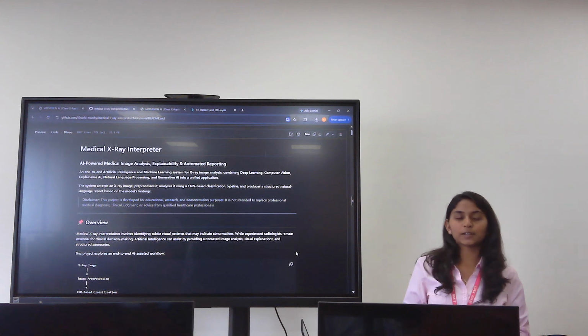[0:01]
Under the Samsung Innovation Campus, I've built a capstone project. The topic is a medical X-ray interpreter, and my model is MedVision AI.
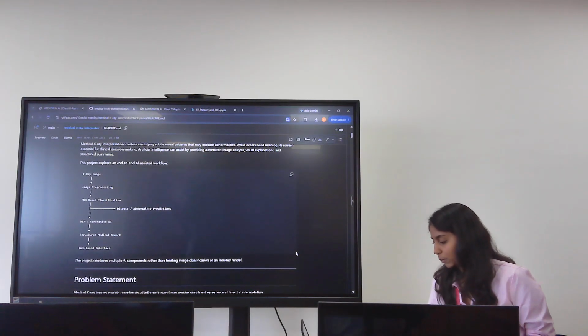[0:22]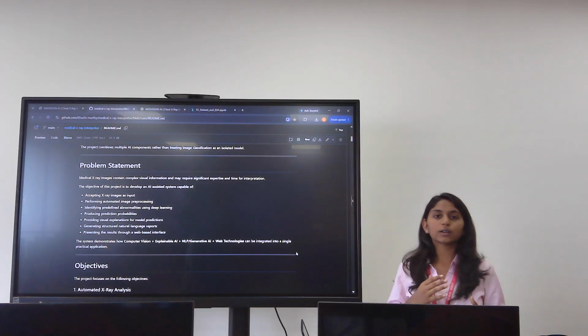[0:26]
Looking into the problem statement, medical X-ray images are very complex. They have very complex visual information which is difficult for normal people to understand. You just take an X-ray and it's difficult to understand whether you have some disease, or which disease you have. So I've tried to find a solution to that. Yes, there are expert radiologists, but we can only visualize what is there in the X-ray.
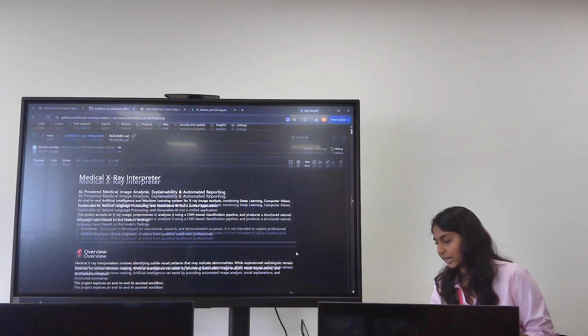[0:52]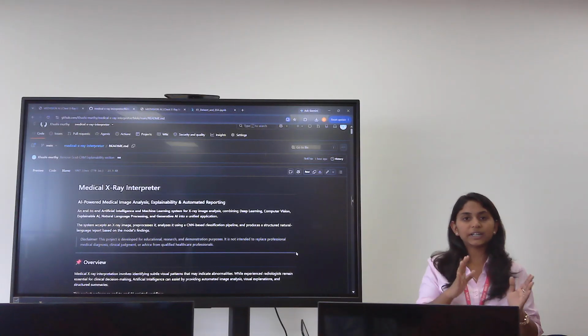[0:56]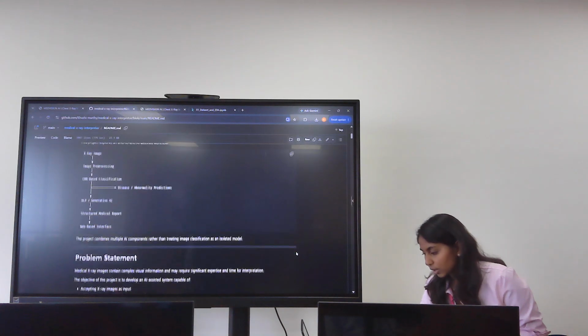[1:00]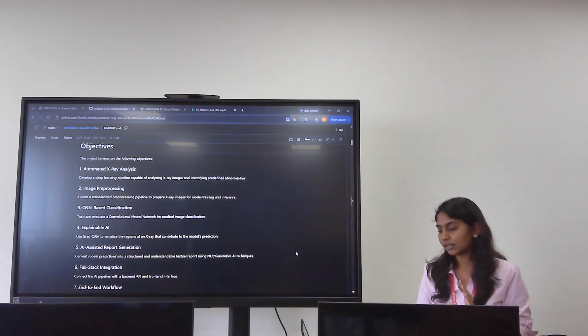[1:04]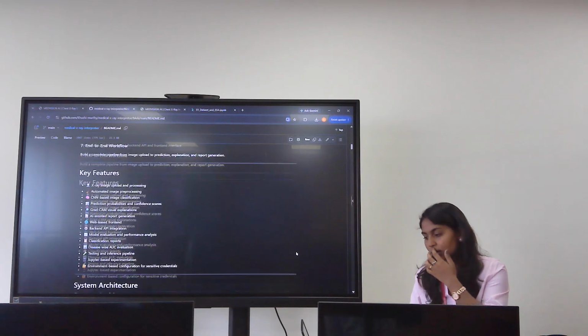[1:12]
MedVision AI is an AI-powered medical image analyzer. It is an end-to-end artificial intelligence and machine learning model. Looking into my project, the objectives are analyzing the X-ray. I have done image pre-processing and I have included CNN-based classification.
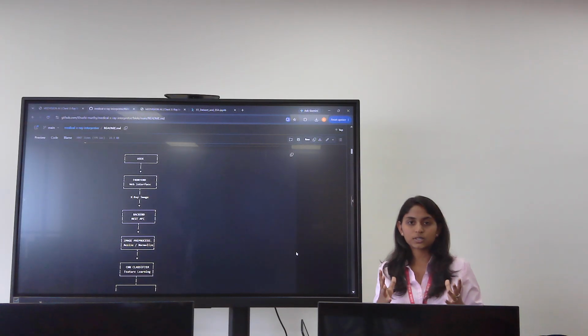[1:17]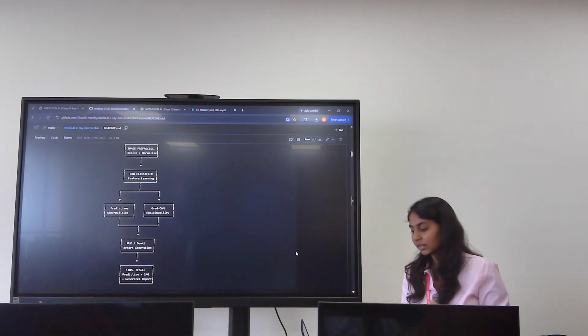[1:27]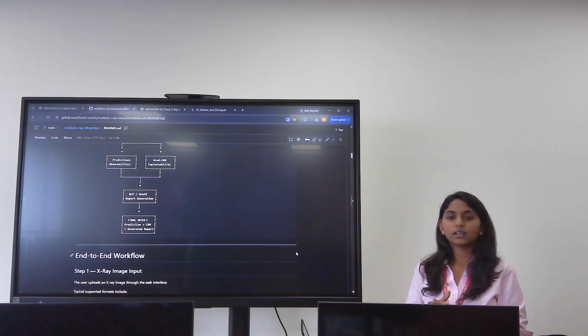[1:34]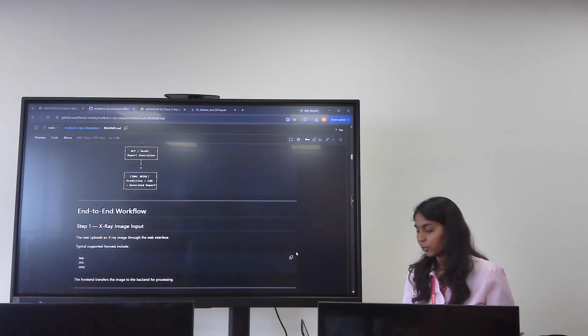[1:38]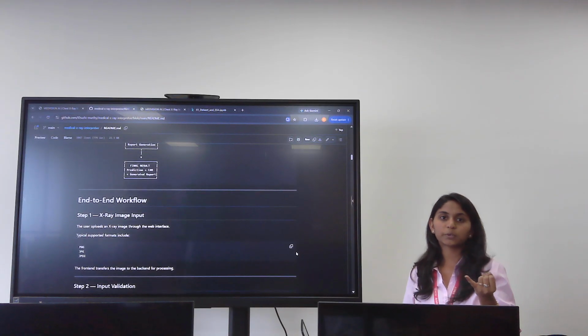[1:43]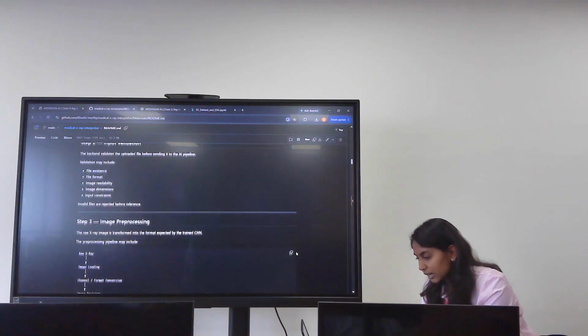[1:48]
This is the system architecture: when a user uses the model, they get a front end. We can put in an X-ray image, which will be processed in the backend. Then the classifier predicts if there are any abnormalities in the X-ray image or if it is okay. Then we use NLP to generate a report. It's an AI-generated report, and the report will have the final result, the accuracy, to what percentage the disease is there, and the prediction. And this is the end-to-end workflow.
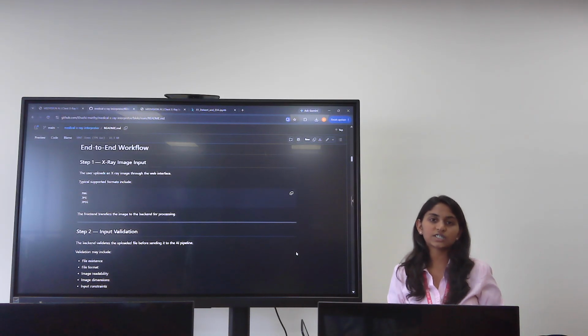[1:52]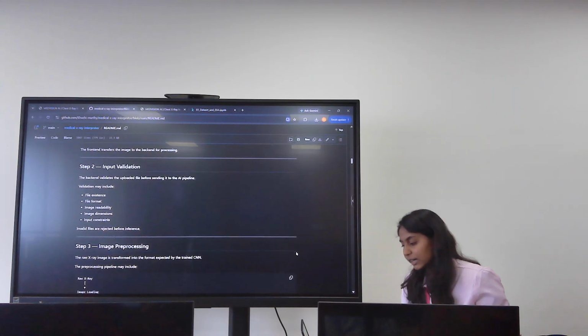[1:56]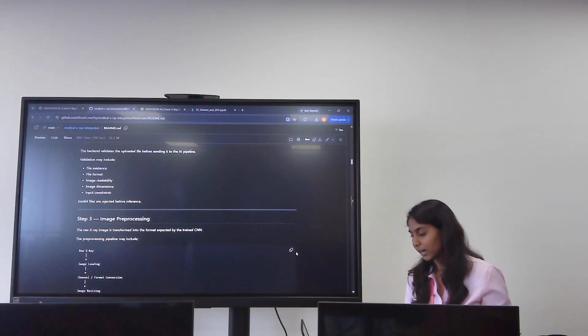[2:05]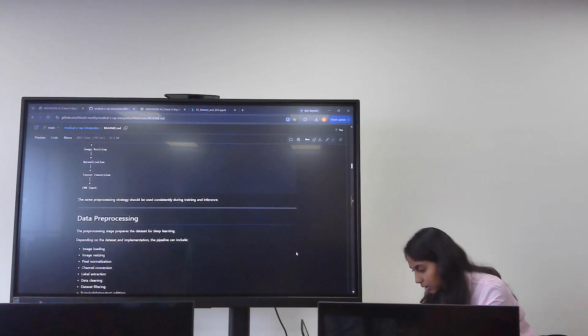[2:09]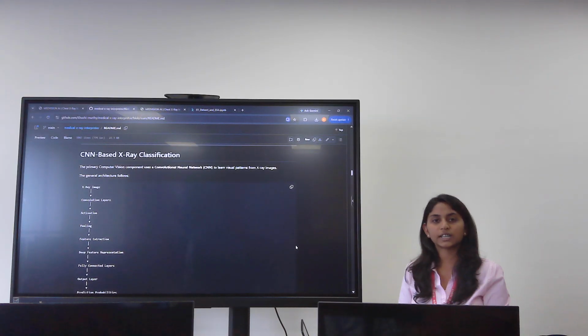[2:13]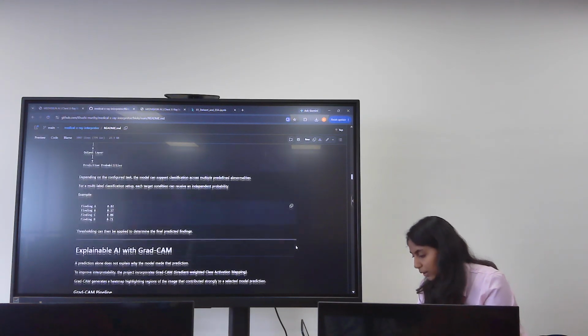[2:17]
Looking at the X-ray image input, only PNG, JPEG and JPG files are supported. Looking at input validation, there has to be an existing file, and it checks the file format, image readability and everything. Next, going to the CNN-based classification. As I said, I've used a CNN classifier, that is convolutional neural networks, in my project.
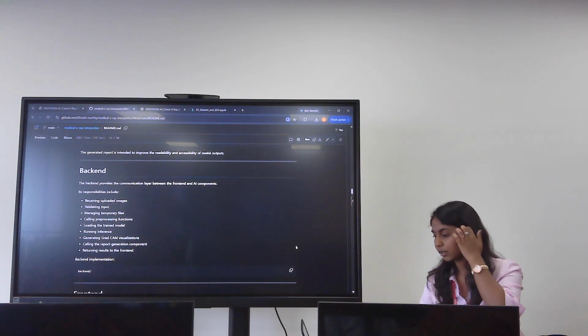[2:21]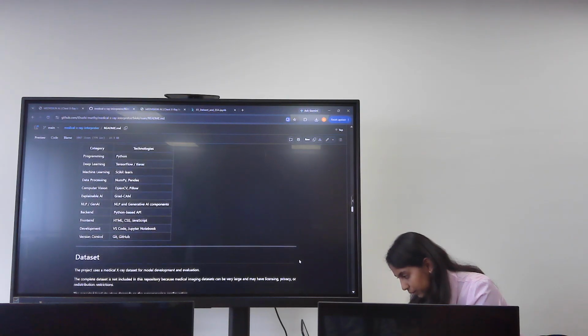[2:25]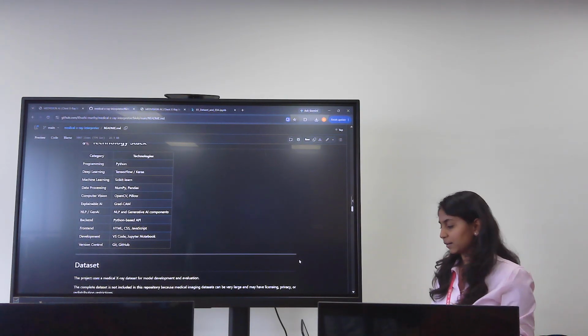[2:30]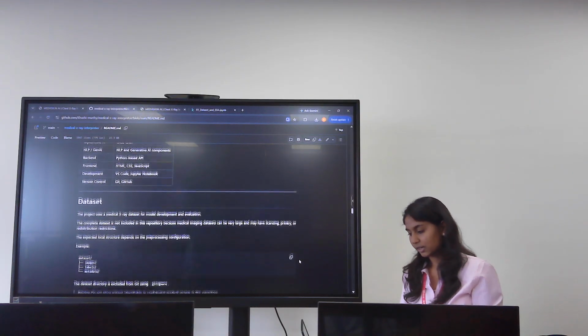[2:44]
Next, the tech stack. The programming is entirely done in Python. I've used TensorFlow with Keras, and for data pre-processing, I've used NumPy and Pandas. For the front end, I've used HTML, CSS, and JavaScript. The development was entirely done in VS Code.
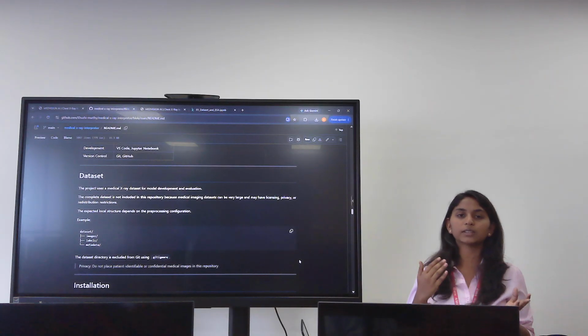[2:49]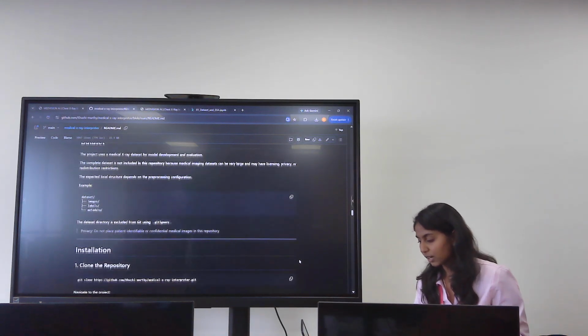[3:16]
And coming to the data set. I took the data set from the National Institutes of Health. It is a chest X-ray data set. The data set was around 40 GB and had 112,000 X-ray images, out of which many images did not have any diseases, and half of the disease images were infiltration. That's 14 diseases with around 112,000 images. So pre-processing had to be done, which I have done, and I'll show you next.
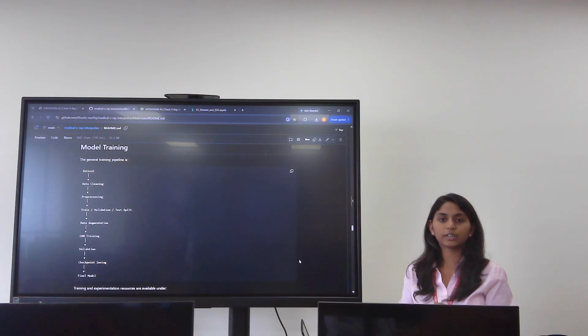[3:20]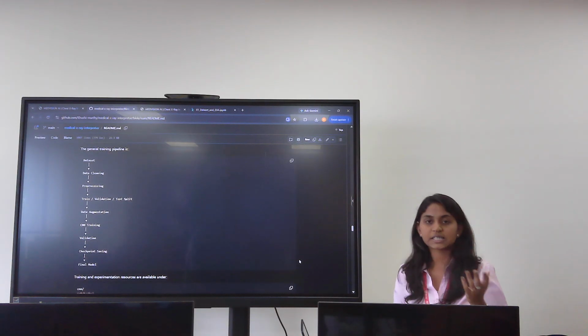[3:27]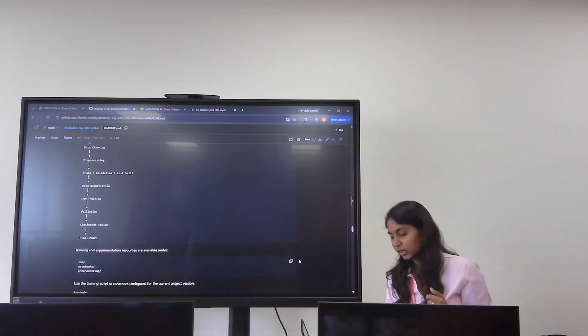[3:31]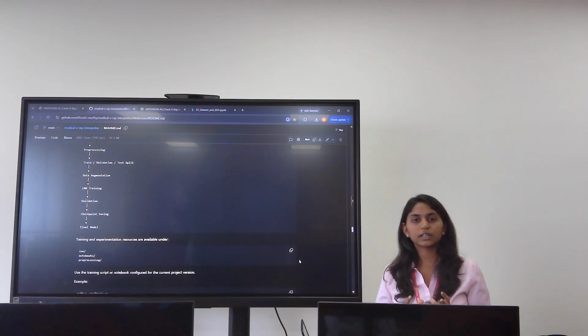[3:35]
Next comes the model training. First the data set was taken and cleaned, removing any missing data. Then the pre-processing was performed. After that, I trained the model. Then data augmentation, because take the example of hernia. In my data set, hernia had only 200 images, whereas infiltration had around 22,000 images, which made the data set imbalanced. So the first thing I did was data augmentation.
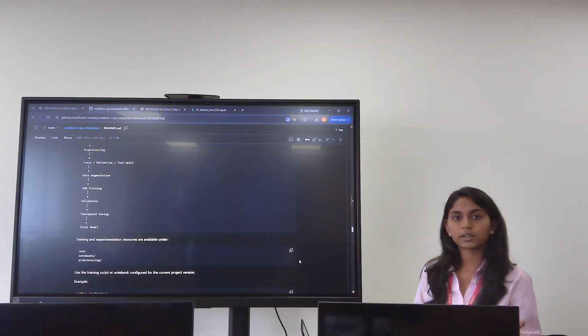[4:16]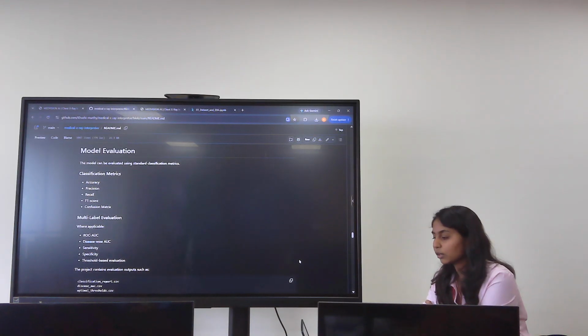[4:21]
What data augmentation does is slightly rotate or zoom the images, which creates variants of the current chest X-ray that make it easier to train the model. The second thing I did was assigning weights. As hernia had fewer images, I assigned more weight to hernia and less weight to infiltration, which I'll show next. Then model evaluation, with the classification metrics: accuracy, precision, and recall.
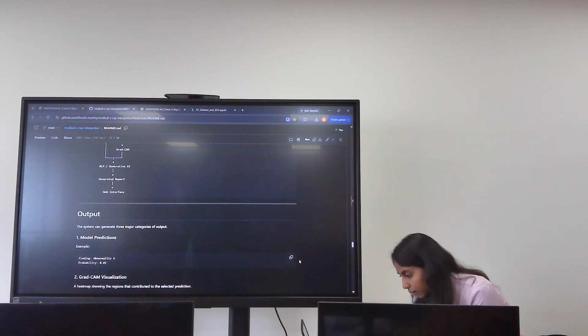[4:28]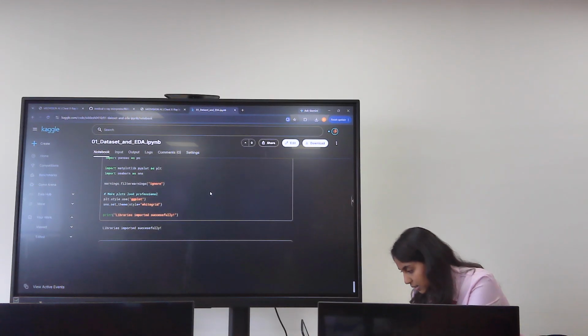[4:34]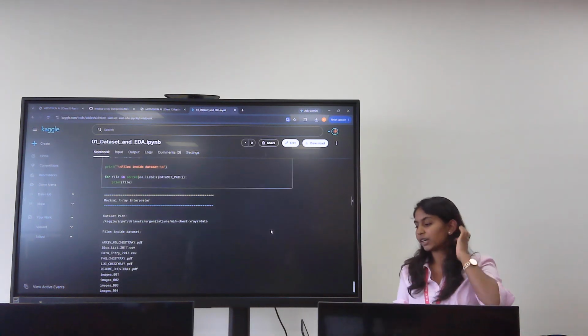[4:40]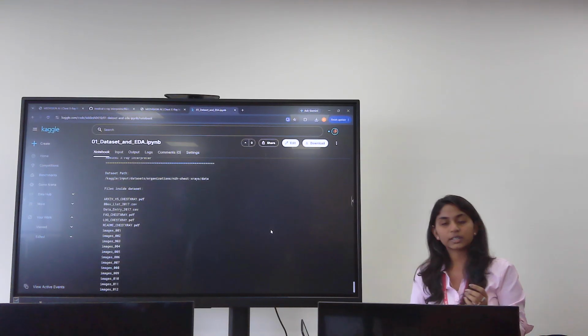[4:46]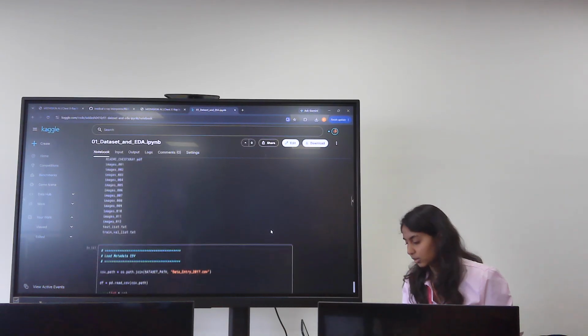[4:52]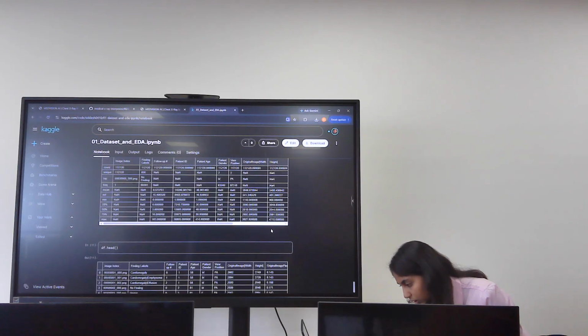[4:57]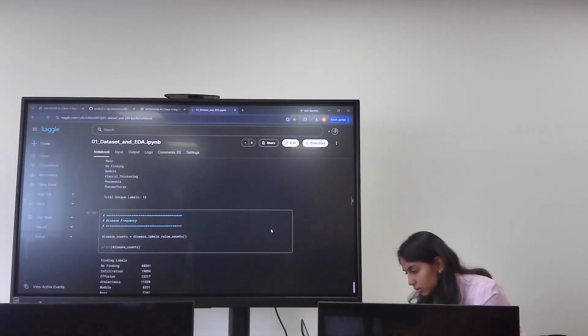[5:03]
Next, looking into the EDA, that is exploratory data analysis. I have trained my model on Kaggle because the data set was very huge, at 40 GB. The same entire data set was present on Kaggle, so my model is trained on Kaggle. As we can see here, these are the 14 classes, or the 14 diseases, that the data set had.
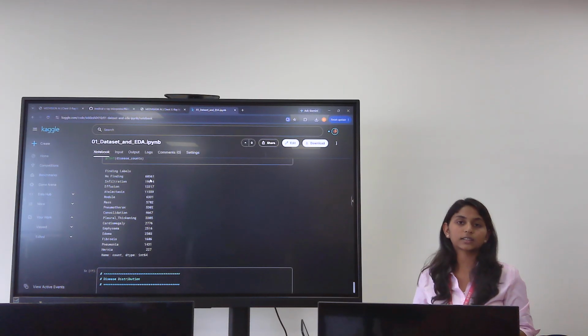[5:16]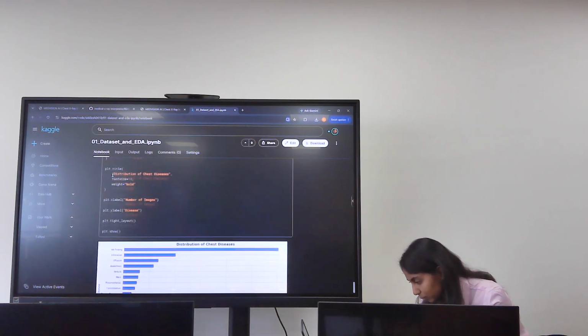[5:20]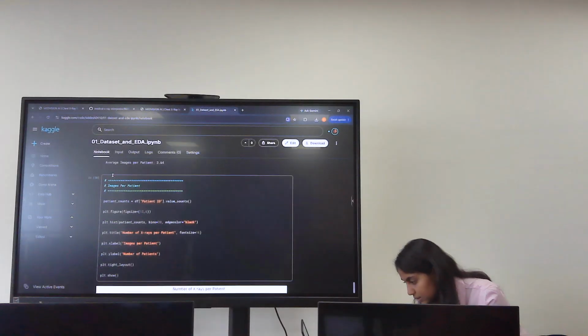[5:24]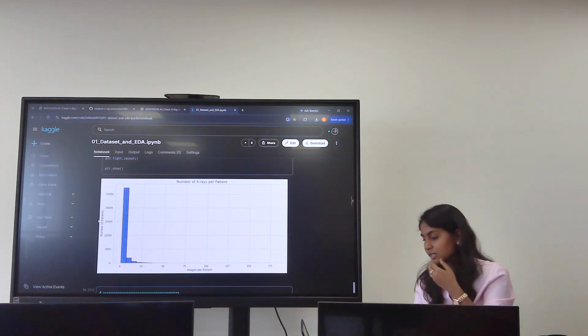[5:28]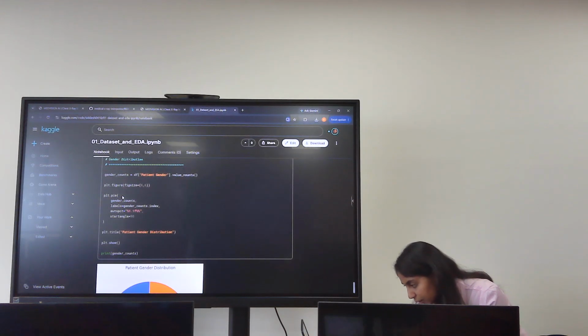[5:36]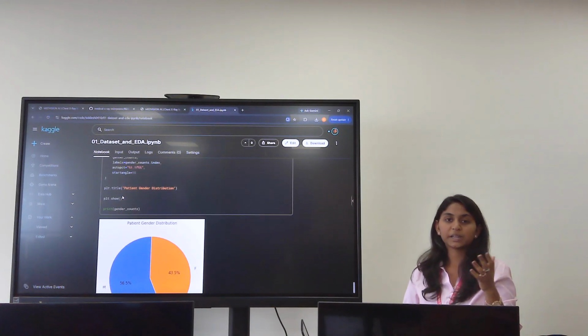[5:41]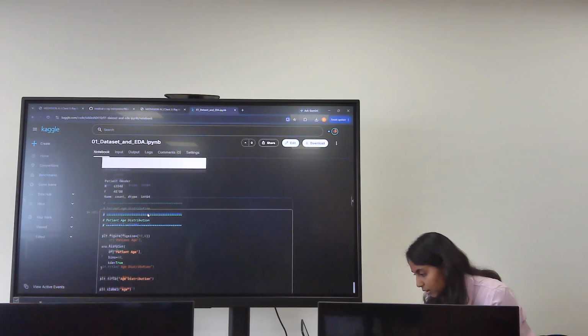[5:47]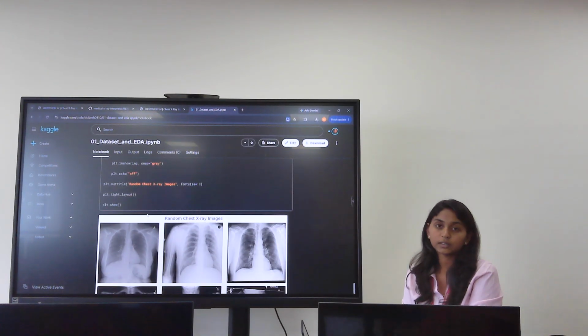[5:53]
Most of the X-ray images, about 60,000 images, had no findings at all. This is the chart that shows there were no findings. And for images per patient in the data, about 25,000 patients did not have any disease at all. I've also analyzed the gender distribution, like how many male patients' chest X-rays there are and how many female patients' chest X-rays there are. This is all the data analysis to better understand the given data set.
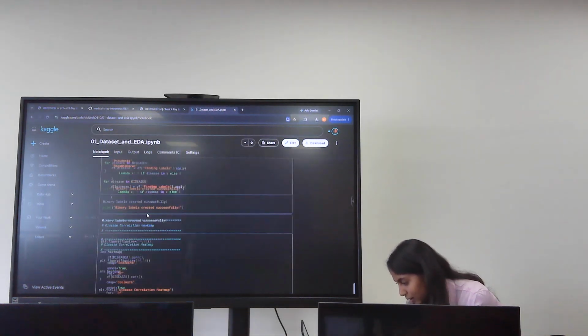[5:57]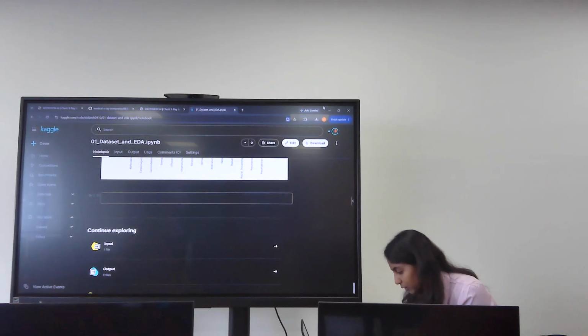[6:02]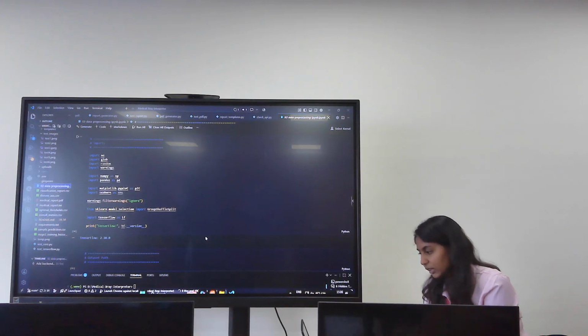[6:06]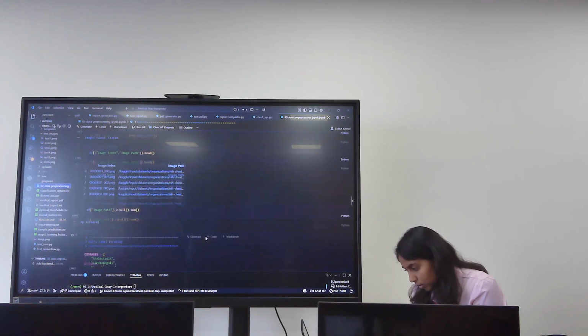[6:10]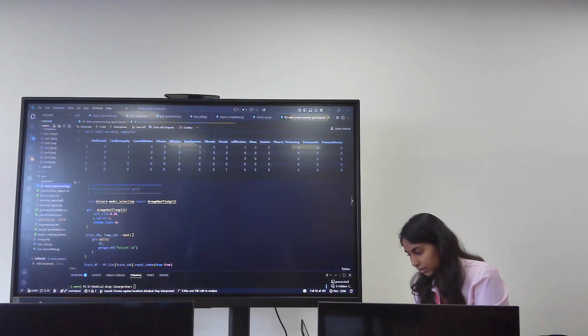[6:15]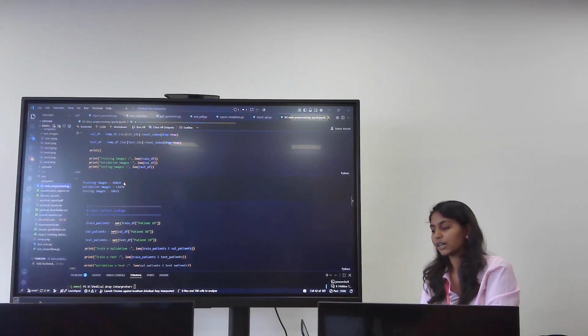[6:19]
And this is the heat map related to that. Next, yes, and this is the data pre-processing. As I said, all the 14 diseases I've taken, and I've divided the data set.
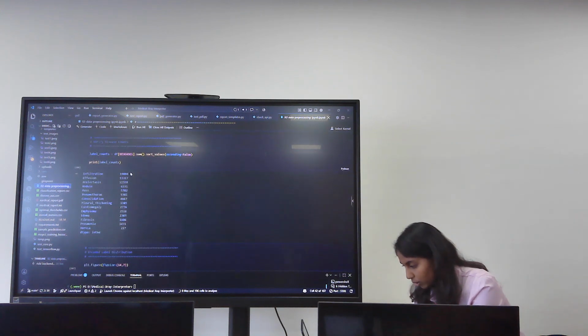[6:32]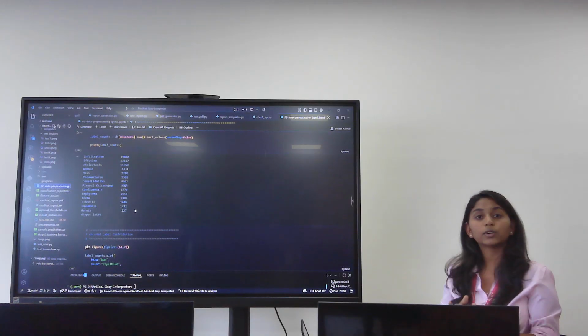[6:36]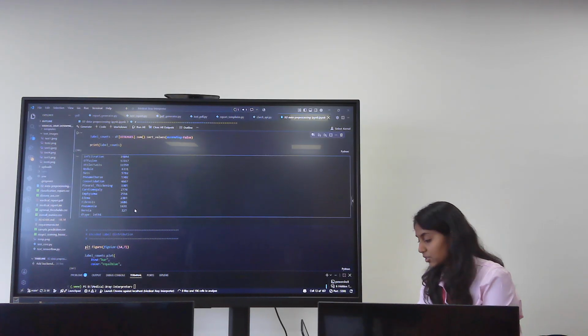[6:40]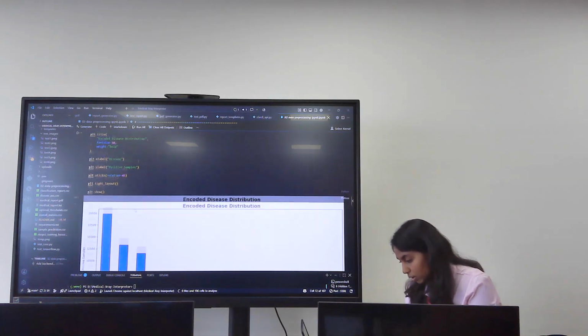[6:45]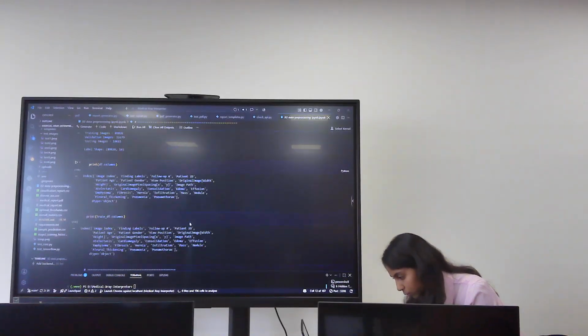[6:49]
That is, training images 89,000, validation images 11,000, and testing images 10,000. So I made sure that there is no data leakage into the testing model. These are the number of images I said for diseases. We can say infiltration has 19,800 images, while hernia has only 200 images, which can be seen through this chart.
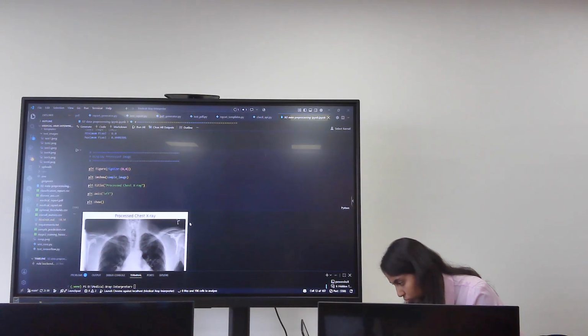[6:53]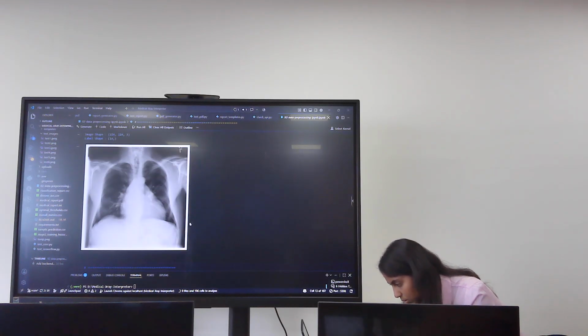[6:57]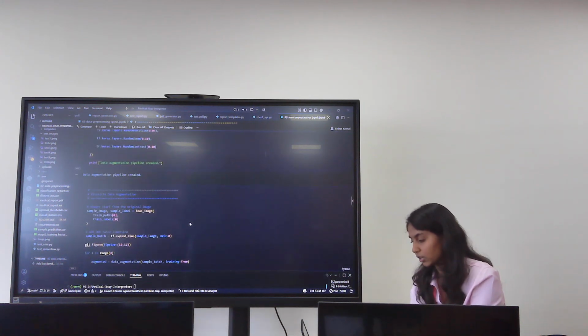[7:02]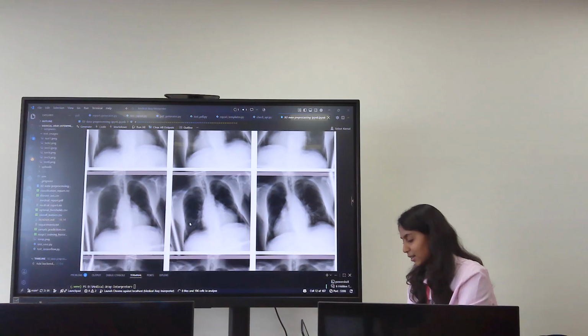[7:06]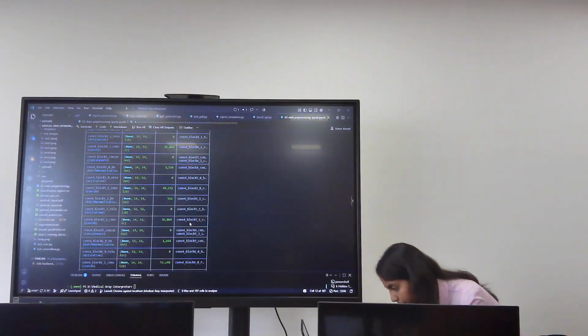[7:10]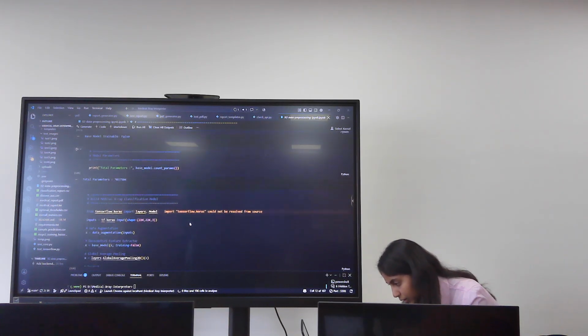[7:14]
So for that reason, this is the processing. Yes, so for that I've done data augmentation, as you can see here, when the X-rays are slightly rotated or zoomed. And this is the total parameters in my model.
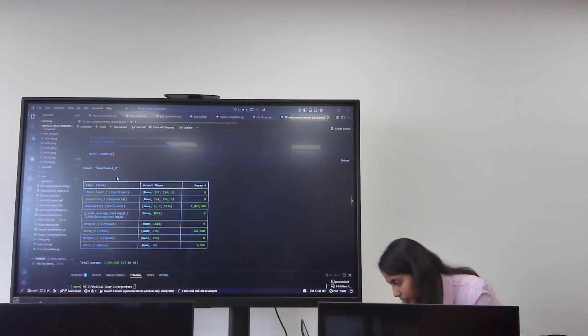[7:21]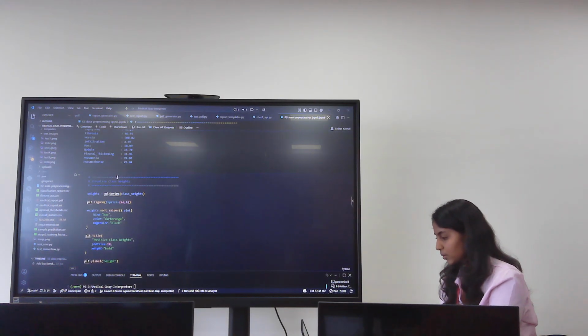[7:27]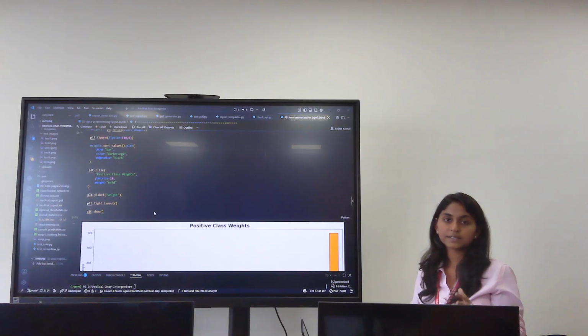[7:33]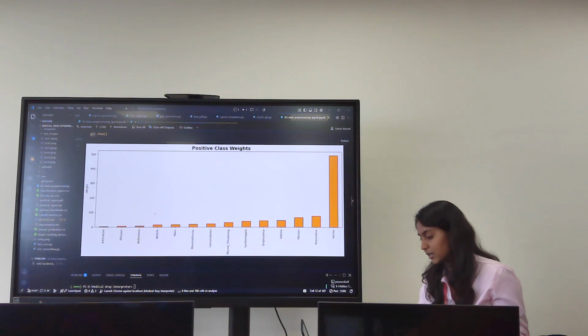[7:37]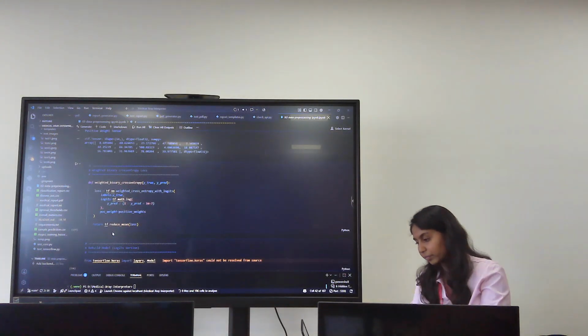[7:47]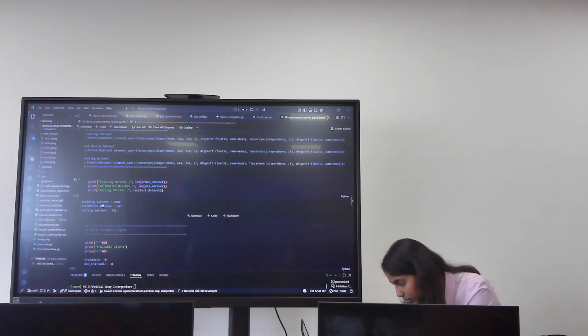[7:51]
Yes, these are the positive class weights that are assigned to the model, and class weights are assigned by seeing the number of chest X-ray images. As I said, infiltration images were more, so the assigned weight is less, while for hernia, the images were very few, so the assigned weight is more. This was the pre-processing part.
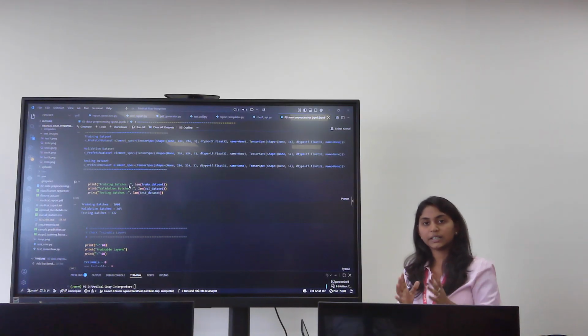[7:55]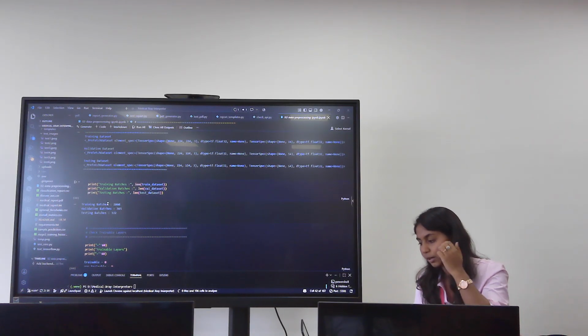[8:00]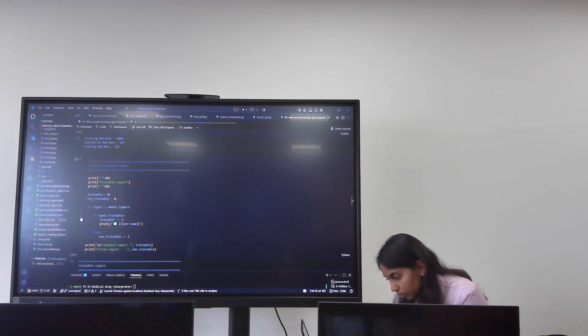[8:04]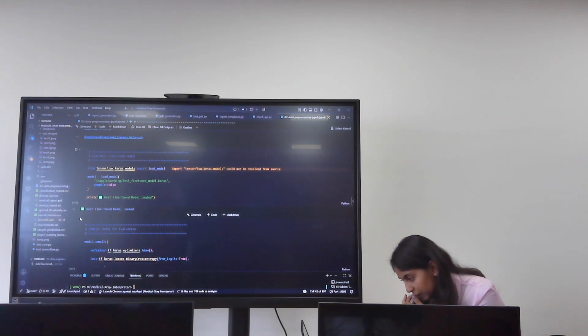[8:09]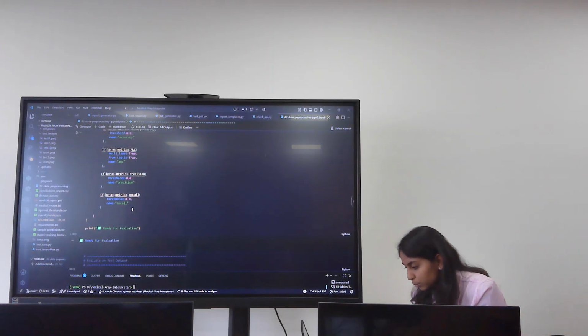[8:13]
And as you can see, I did not train the model completely at once. It was done in batches. So this is the training batch, validation batch, and the testing batch. After that, at last I did fine tuning of the model. This is the evaluation metrics. The test AUC was 0.76, and precision was 0.53.
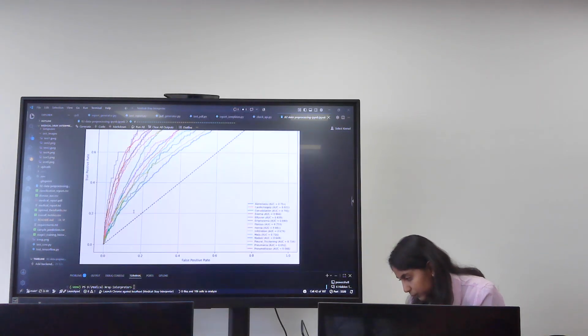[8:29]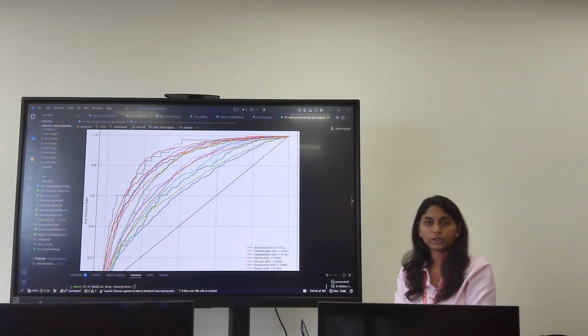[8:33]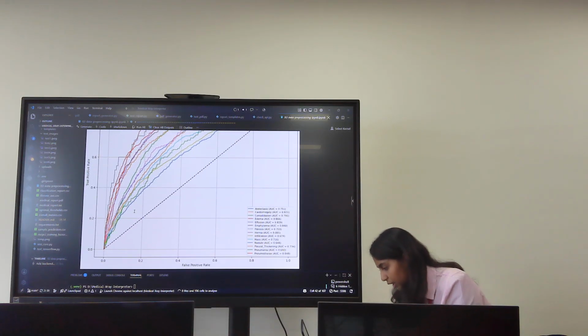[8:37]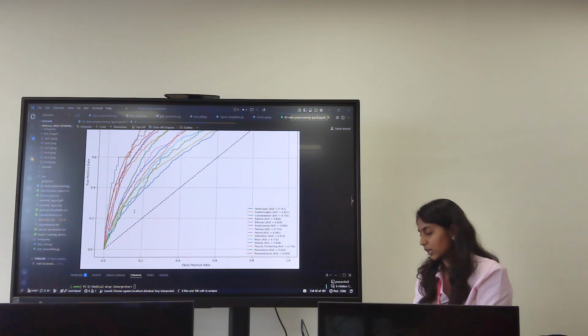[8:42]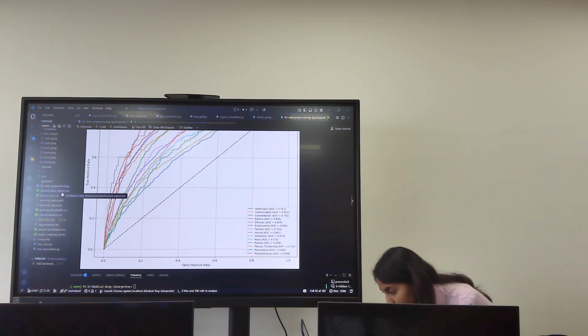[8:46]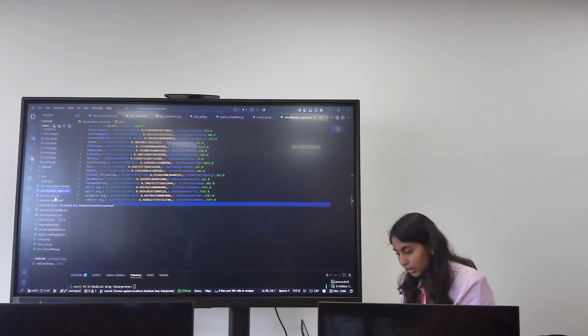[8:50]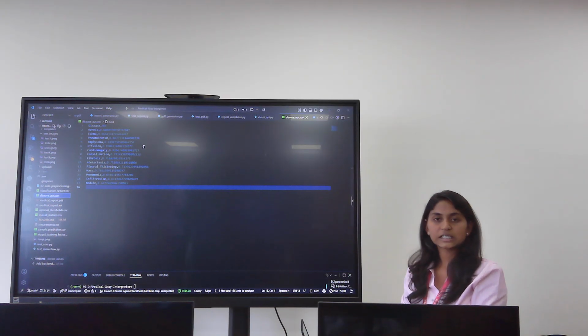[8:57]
And this is the ROC curve for all the 14 diseases, where we can see that cardiomegaly has around 0.82 and consolidation has 0.79. That is, it's different for every disease. And this is the classification report of all the 14 diseases, and the AUC, that's the area under curve. As we can see, every disease has a decent AUC.
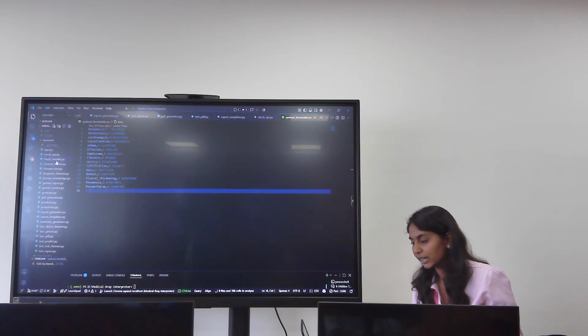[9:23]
As I said, when we put in an X-ray image, the model processes it and then analyzes if there are any diseases. To analyze it, there is a particular threshold or percentage for every disease. So these are the thresholds for every disease. If it is detected above that, only then the disease will be taken as positive.
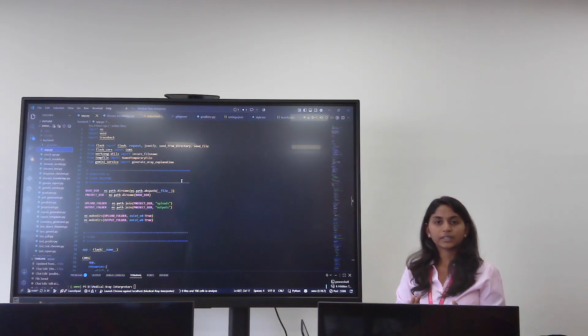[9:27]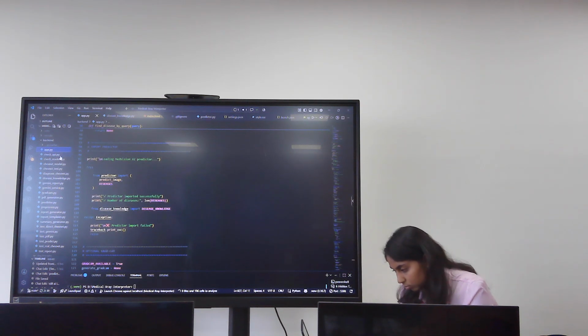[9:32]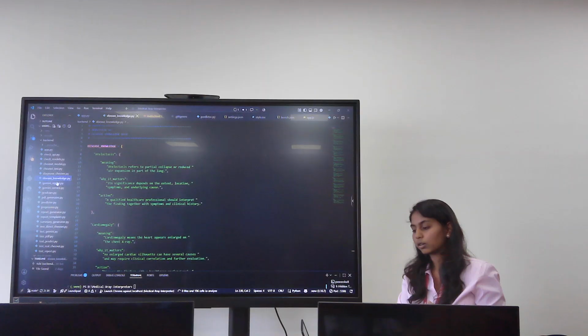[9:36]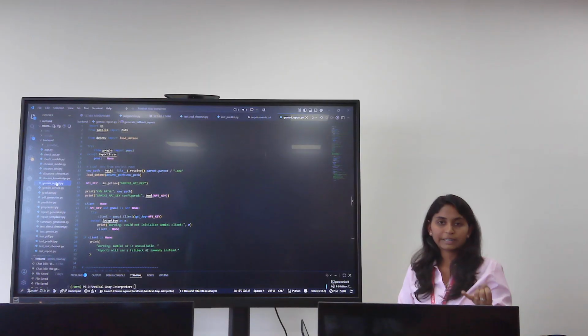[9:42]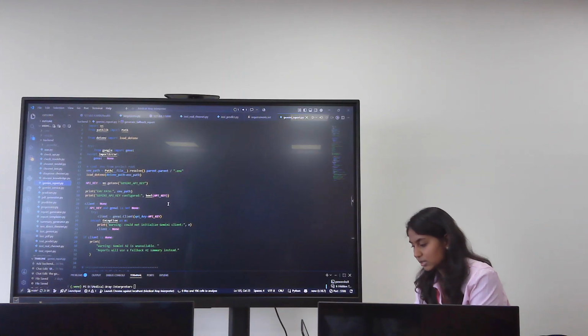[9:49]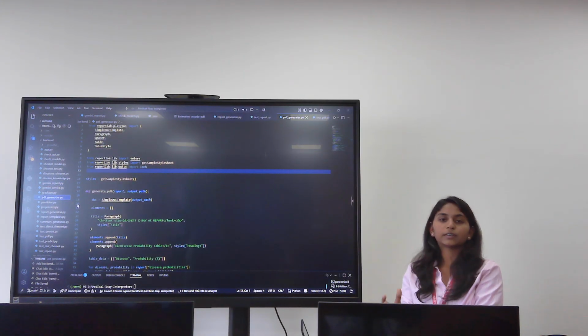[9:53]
And this is the app.py, that is the entire backend code of my model. I have also put in disease knowledge so that the model knows what the problem is, or for every disease what should be done. And I have also integrated Gemini report. This is the Gemini report part. And the PDF generator will create the report PDF.
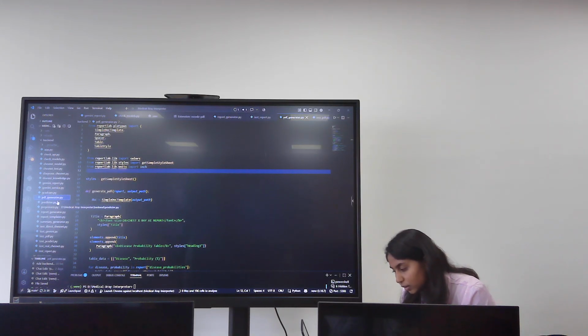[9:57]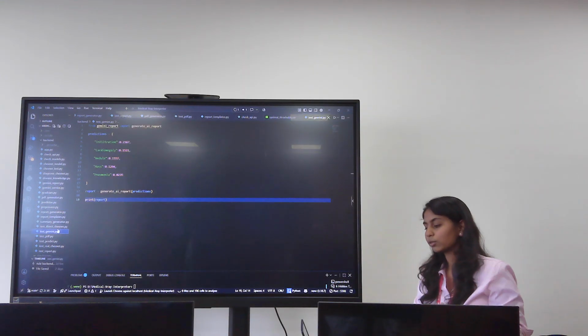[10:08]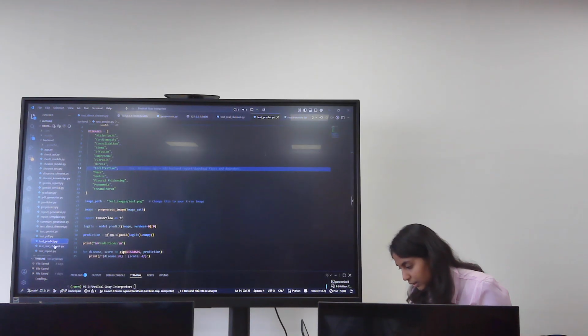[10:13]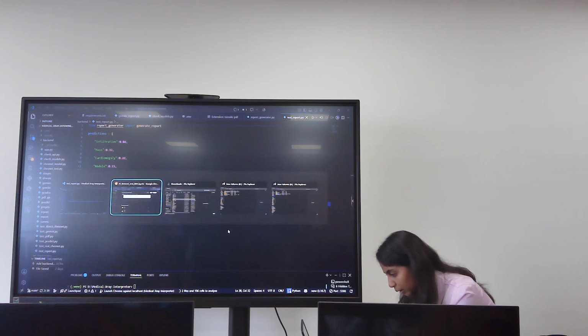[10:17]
Predictor, this part will predict which disease it is. And this is the pre-processing code. I have also tested each and everything separately so that there won't be any issue when coming to the model.
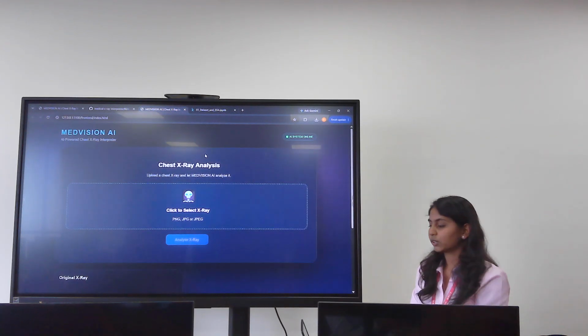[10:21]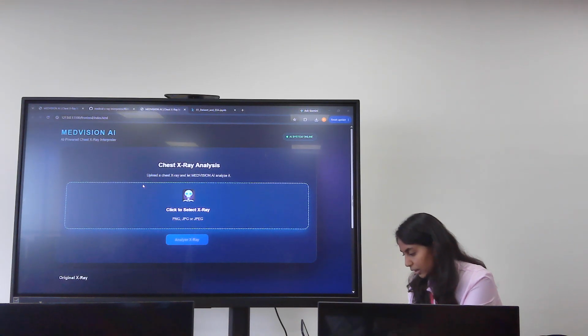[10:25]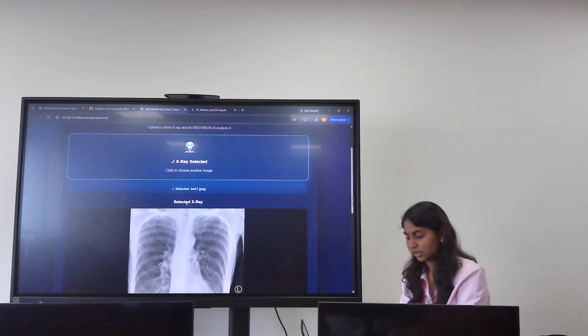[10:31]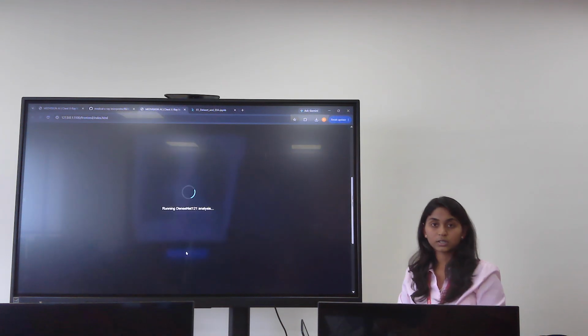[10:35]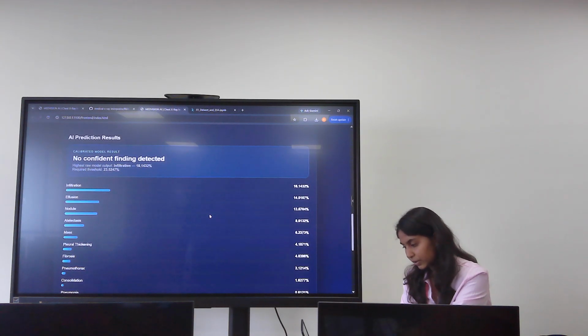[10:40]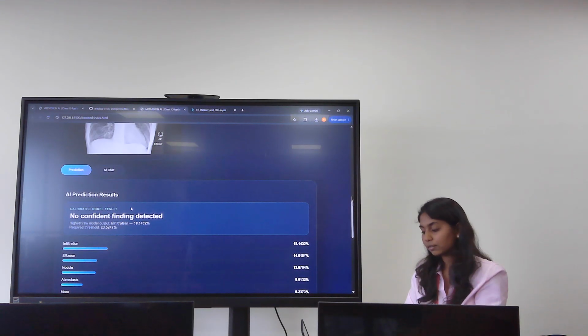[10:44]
This is my model, MedVision AI. Let's check it out. So I'll upload an image, that is a test image. So this is a normal chest X-ray. Let's see, it is prone to some diseases, but it doesn't have any disease. Let's see what it detects. So it is showing no confident finding detected, while it is prone to infiltration sometimes.
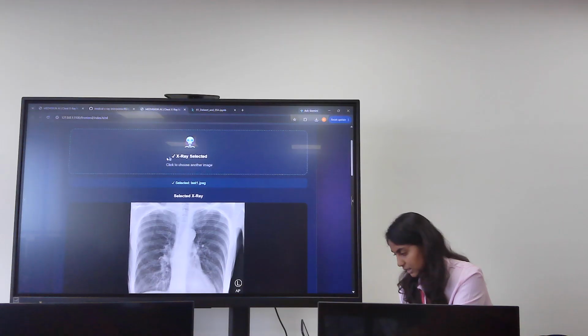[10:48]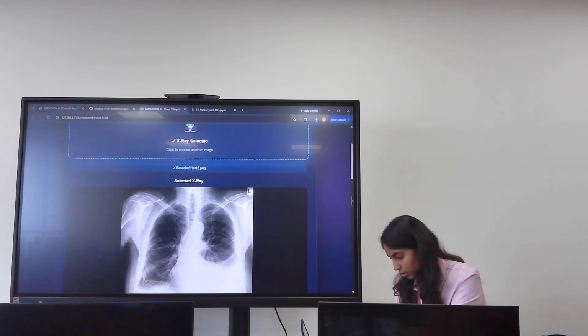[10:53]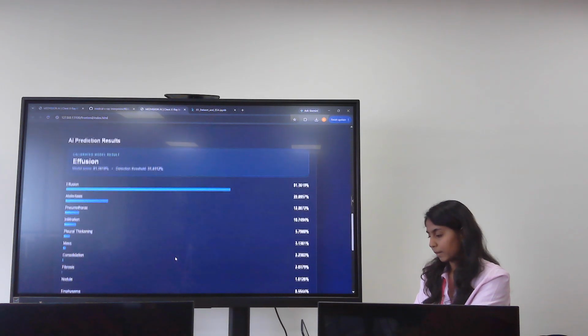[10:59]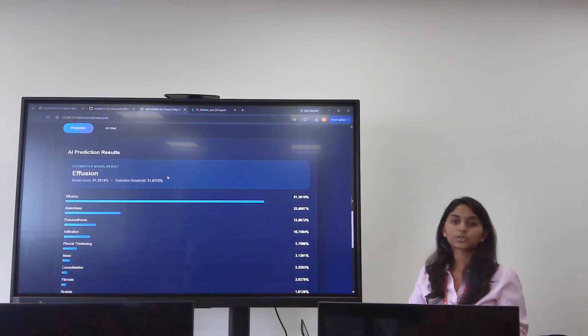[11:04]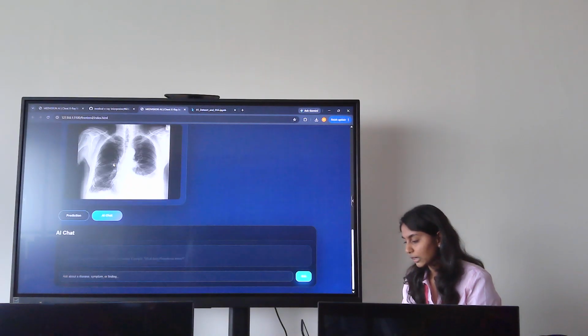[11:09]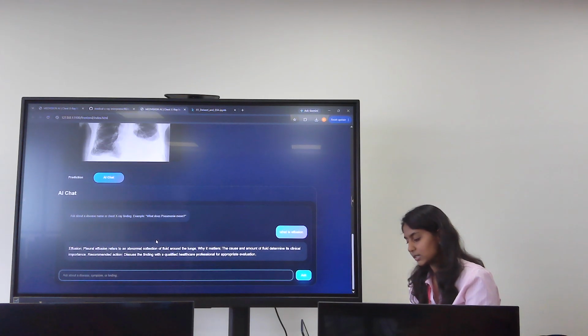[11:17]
So let's change the image. Analyze. So now it's an 81% model score. It's showing that the disease is effusion, but now we don't know what effusion is. So we can ask here what is effusion. The AI chat says that pleural effusion refers to abnormal collection of fluid around the lungs. So that's effusion. This is how we'll get to know.
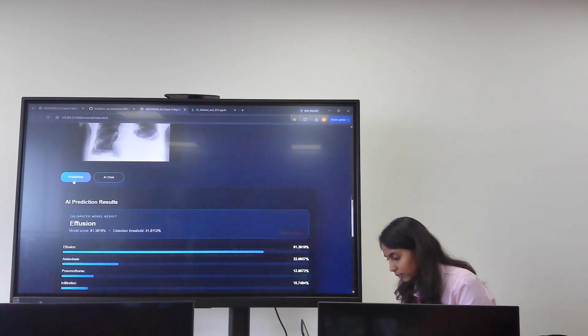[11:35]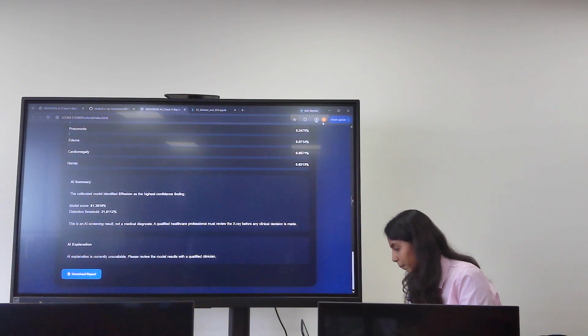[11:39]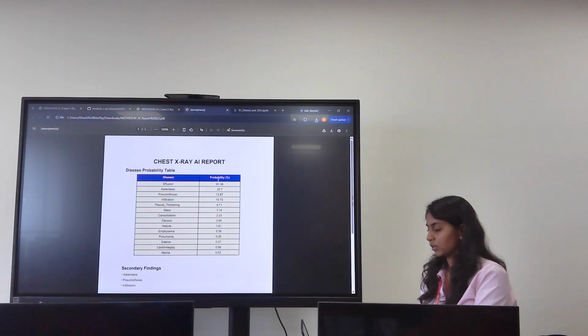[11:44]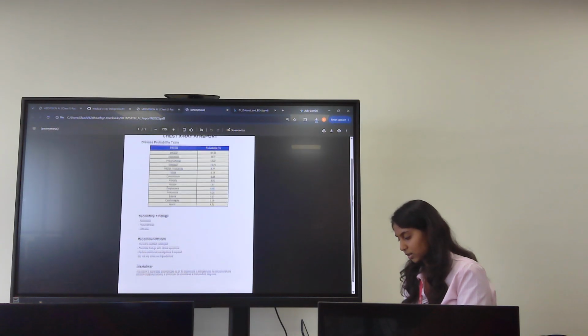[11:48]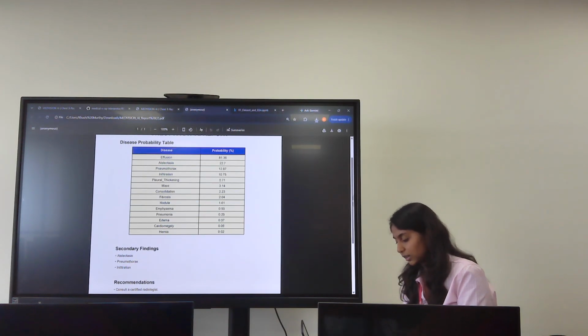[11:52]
But as we know, AI is not a doctor. So it also recommends that you discuss the finding with a qualified healthcare professional. And we can also download the report from here. And this is how the report looks. As you can see, the probability of effusion is 81%. And the secondary findings, that is the next highest, are the other diseases, which are 22 and 12%.
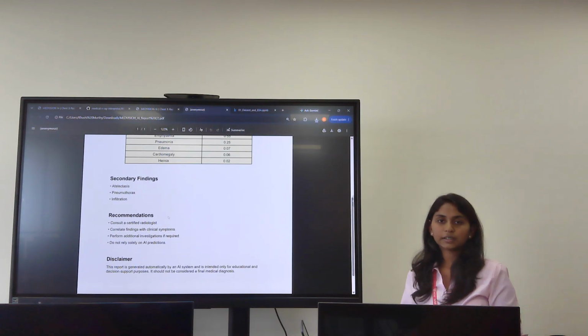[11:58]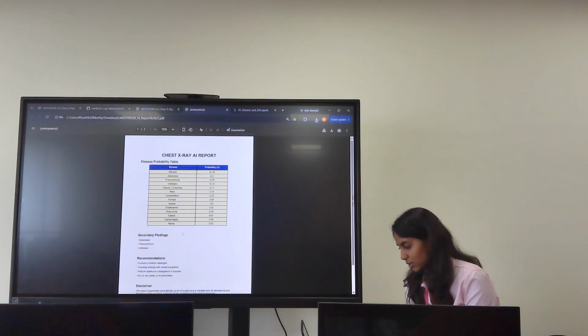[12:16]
The recommendation: as it is AI, we cannot let people take decisions on their own. AI can only predict the disease, but any major decision should be taken by an experienced radiologist. So the recommendation is to consult a certified radiologist. And so this is my project.